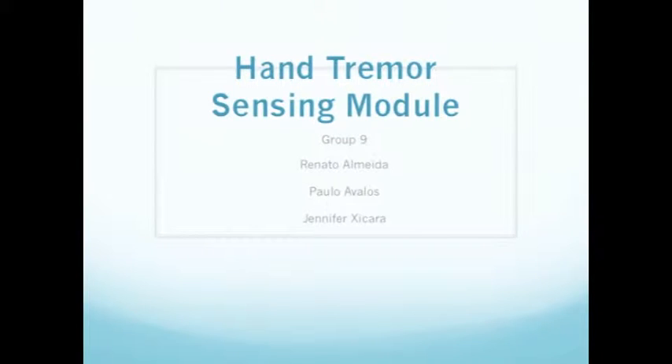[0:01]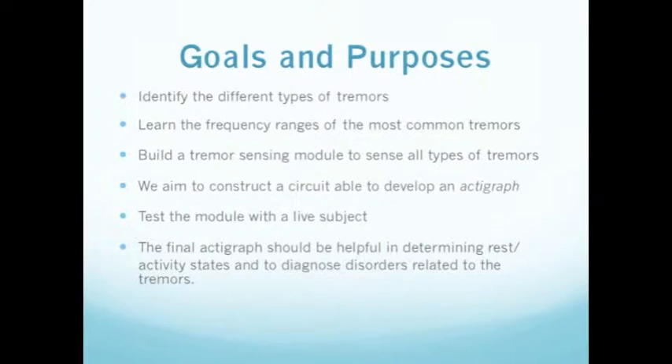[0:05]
Hand Tremor Sensing Module, Group 9. Today we start off by going over specific diseases we plan on diagnosing with our medical device. Some background information on tremors will include the identification of different tremor types as well as the frequency ranges of the most common tremors. We will then move on to describe how to build the tremor sensing module to sense all types of tremors mentioned.
We aim to construct a circuit able to develop an actigraph for which our medical device will be used to diagnose our subject for tremors. We will then go ahead and demonstrate how we test the modules with the live subject. And finally, the actigraph should be used in determining rest and activity states, which will aid in diagnosing disorders for which tremors are primarily a symptom.
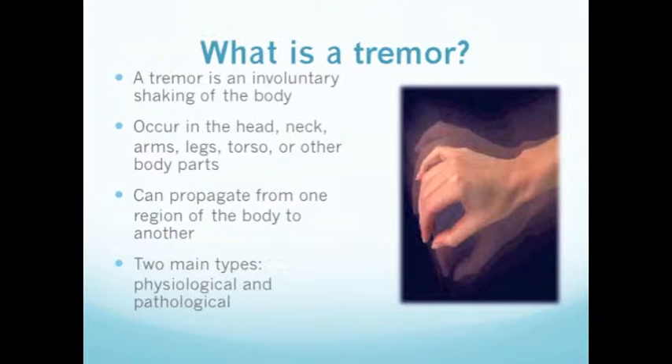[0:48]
For starters, a tremor is an involuntary shaking of the body. Tremor is an unintentional, rhythmic muscle movement involving to and fro movement of one or more parts of the body. The two main types are physiological and pathological. In some people, tremor is a symptom of a neurological disorder or appears as a side effect of certain drugs. The most common form of a tremor, however, occurs in otherwise largely healthy people. Although tremor is not life-threatening, it can be embarrassing to some people and make it harder to perform daily tasks.
This is due to the characteristics of tremors, which may include a rhythmic shaking in the hand, arms, head, legs, or trunk, shaking voice, difficulty writing or drawing, or problems holding and controlling utensils, such as a fork. Some tremors may be triggered by or become exaggerated during times of stress or strong emotion, when the individual is physically exhausted or during certain postures or movements. Tremors may occur at any age, but are most common in middle-aged and older persons. They may be occasional, temporary, or occur intermittently. Tremors also affect men and women equally.
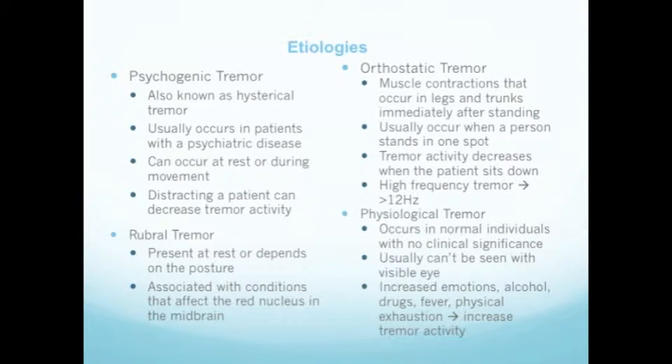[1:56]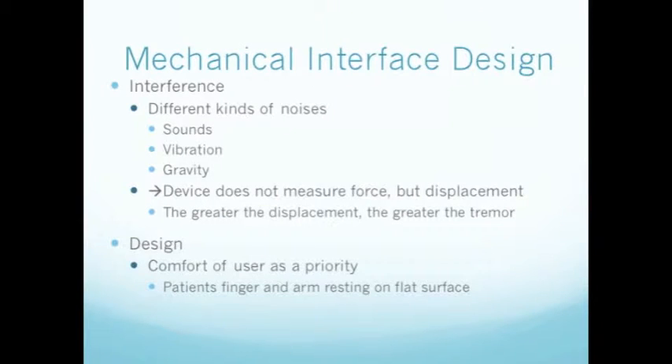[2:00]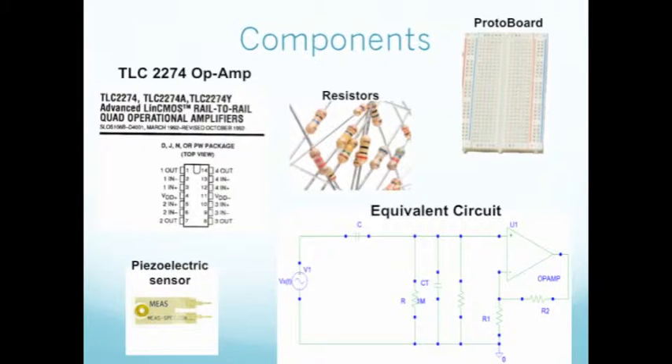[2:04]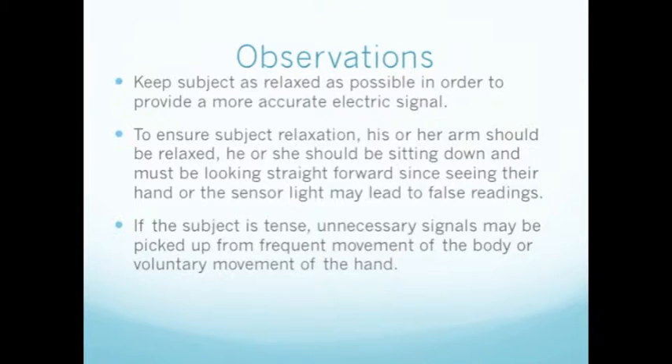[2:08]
A useful way to understand and describe tremors is to define them according to the following types. Parkinsonian tremor, which is commonly due to brain trauma in which brain structures are compromised, such as those in charge of movement control. Patients for the most part have trouble initiating movement and are generally over the age of 60.
Essential tremor, aka benign tremor, is related to genetics and usually affects the hand, head, voice, and tongue. Such patients exhibit a repetitive "yes" head movement. Cerebellar tremor occurs at the end of a purposeful movement and is caused by lesions or damage to the cerebellum. These patients have speech problems or rapid eye rolling.
Dystonic tremor, for which they have a movement disorder where they have involuntary muscle contraction, twitching, or repetitive motions, and for the most part display abnormal, painful postures and positions. Complete rest can help relieve this type of tremor for this patient type.
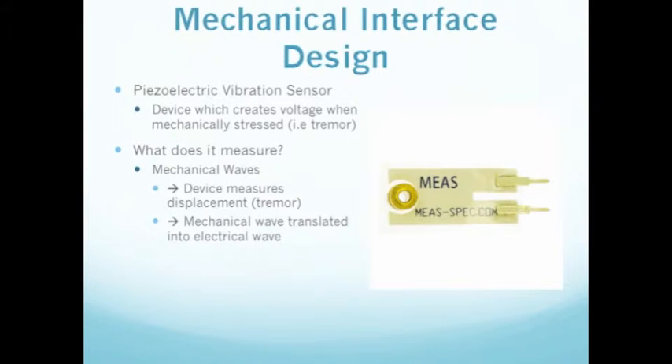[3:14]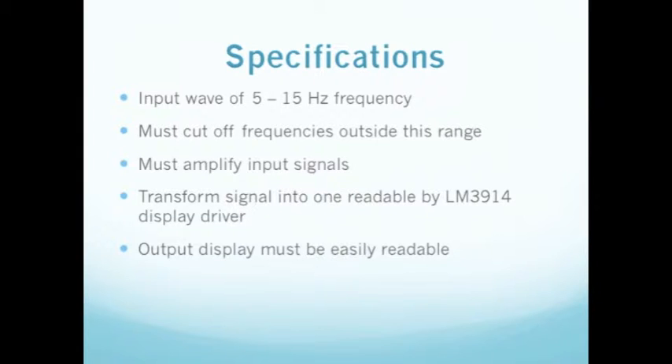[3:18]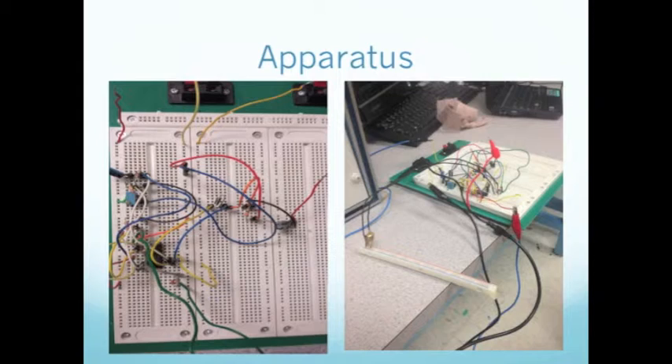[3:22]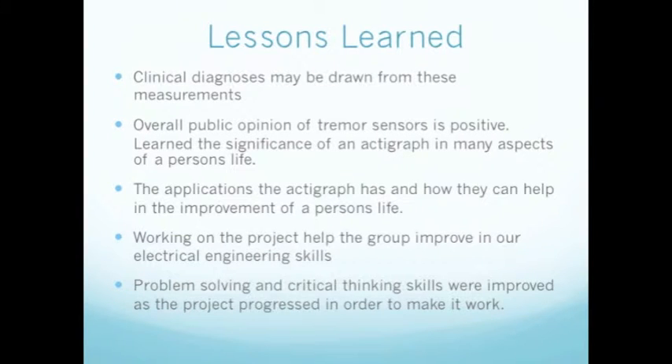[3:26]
We also have psychogenic tremor, also known as hysterical tremor, which usually occurs in patients with a psychiatric disease and can occur at rest or during movement. Distracting a patient can decrease tremor activity. Rubral tremor is present at rest or depends on the posture, and is associated with conditions that affect the red nucleus in the midbrain.
Orthostatic tremor, muscle contractions that occur in the legs and trunk immediately after standing, usually occurs when a person stands in one spot. Tremor activity decreases when the patient sits down, and it is also a high-frequency tremor, greater than 12 Hz. And lastly, we have physiological tremor. It occurs in normal individuals with no clinical significance and usually can be seen with the visible eye. Increased emotions, alcohol, drugs, fever, and physical exhaustion cause increased tremor activity.
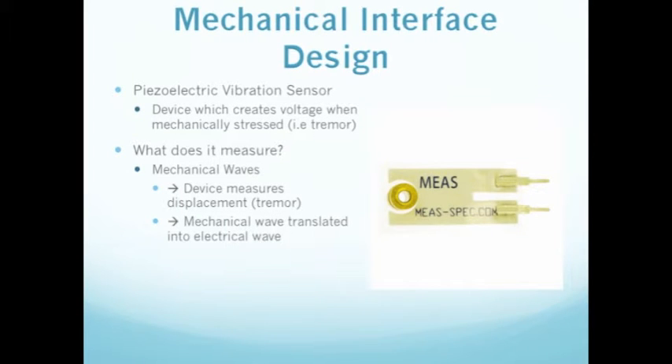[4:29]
In terms of the mechanical interface design, for which we wish to create voltage by inducing mechanical stress, in order to properly detect tremors, we will be using a piezoelectric vibration sensor as displayed in the figure to the right. This sensor will be used to measure mechanical waves which are provided by a tremor, and this device works by measuring displacement, which will then translate mechanical waves into electrical waves.
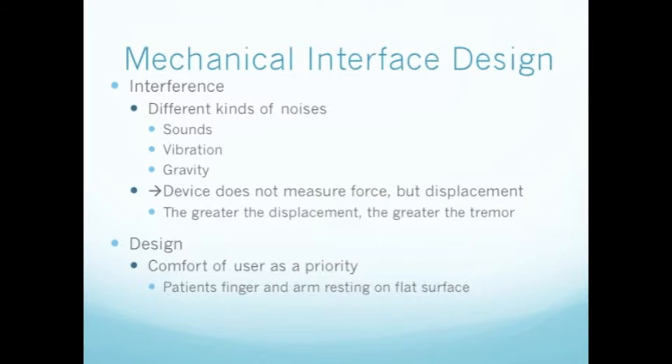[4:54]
A few factors for us to consider for a proper output. We must acknowledge some interference we will come across. Such interference includes different kinds of noise, such as sounds, vibration, and gravity.
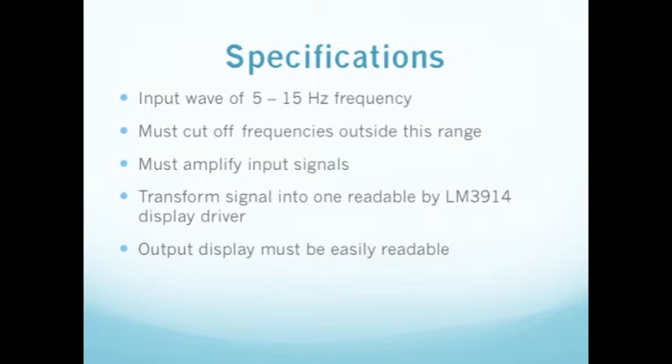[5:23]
For this reason, we must implement a specification in order to get an accurate reading. In our design, we will also consider an easy as well as simple implementation of the device. The following are specifications we must meet in order to achieve satisfactory results.
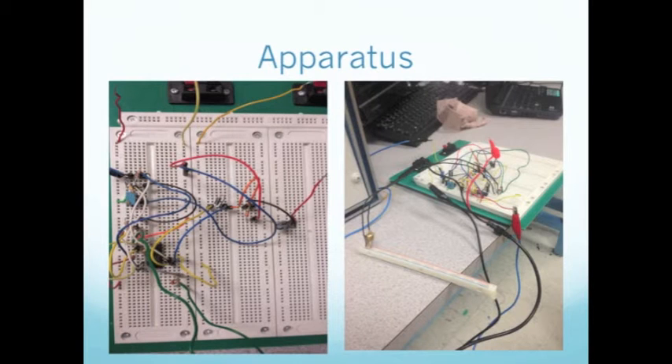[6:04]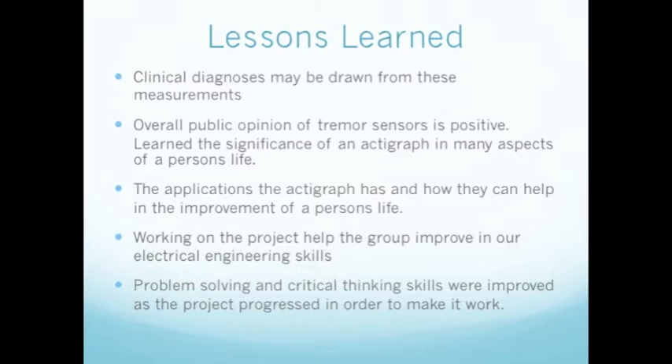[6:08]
The following components were implemented in the lab. The transducer with the patient interface apparatus will now be connected to the input terminals. With no displacement of the transducer, we confirm that the DC voltage at the input to the envelope detector is at the ground potential. We also adjust the potentiometer to adjust this voltage to 0.
Then the nominal voltage gain values in these laboratory instructions will probably implement a level of sensitivity that is too high. So we simulated a very slight tremor by the patient and measured the voltage on pin 5 while observing the display. Then we reduce the voltage gain by lowering the value of resistor 2 in the input stage until the display shows only one segment lit. Then we tested the complete system with tremor amplitudes that simulate normal and pathological values.
As an option, you can enhance your system by adding a sensitivity switch. The normal screening mode, as per the specifications, will be used to distinguish between normal and Parkinson's subjects. The second mode will be applied to subjects with significant tremors to further classify them as moderate or severe.
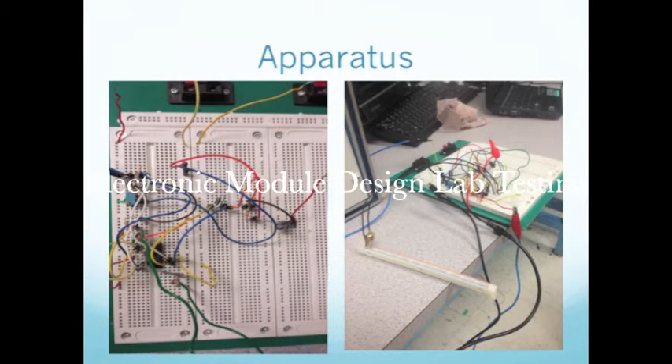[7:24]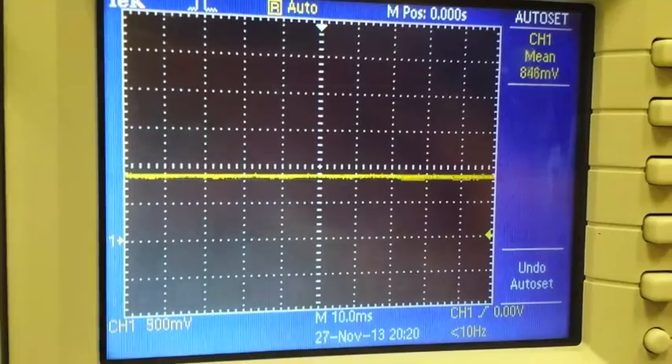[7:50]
Therefore, we obtain this circuitry displayed on the protoboard. The figure on the right is showing the final apparatus as it will measure different tremor types. A long piece to the left of the protoboard, having the piezoelectric vibration sensor attached, will be used to measure the mechanical stress or displacement given off by the tremor, which it converts to voltage, and essentially an output, which the actigraph will display as an oscillation.
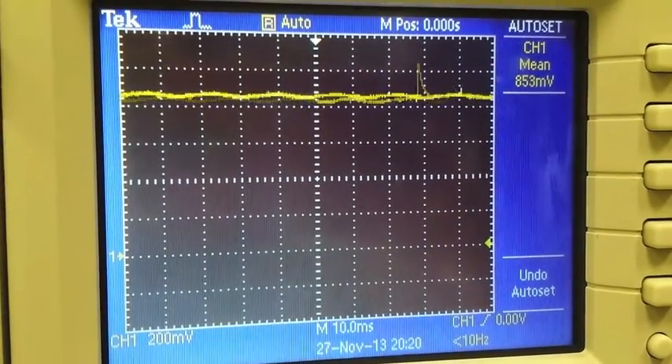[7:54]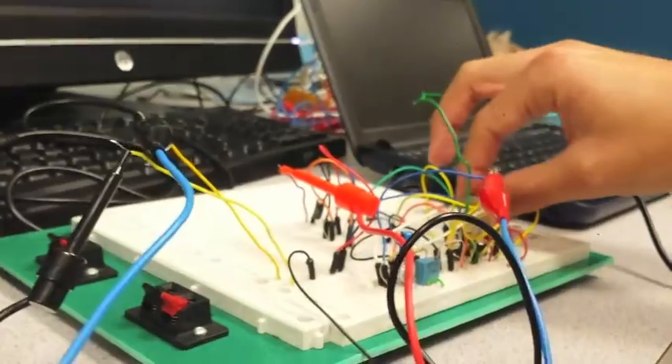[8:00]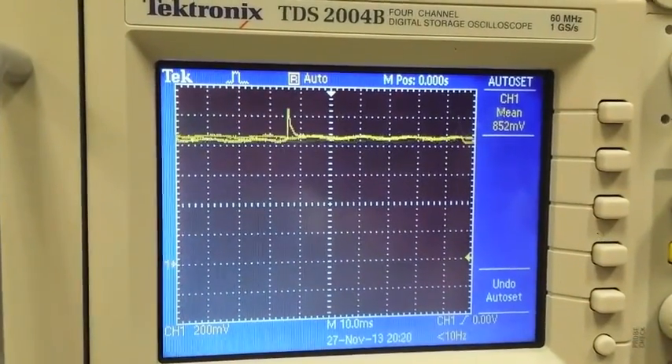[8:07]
In our demonstration, the transducer consists of a piezoelectric plastic film that responds to the tremor motion of the hand of the subject. Then the input amplifier creates a high-pass frequency response based on the capacitance of the sensor combined with the amplifier's input resistance.
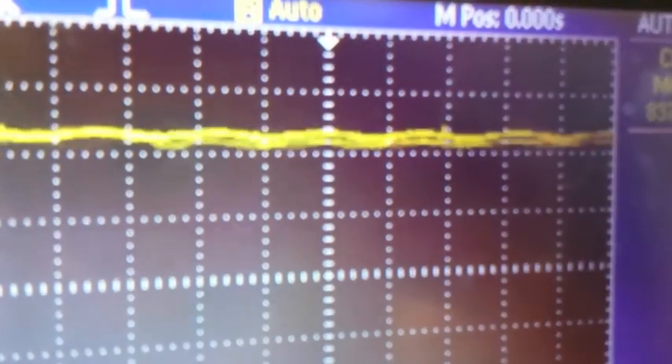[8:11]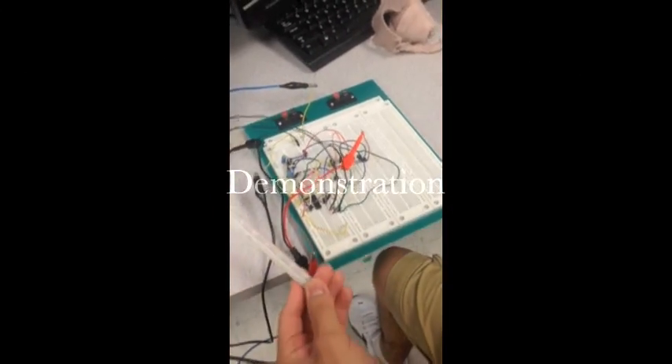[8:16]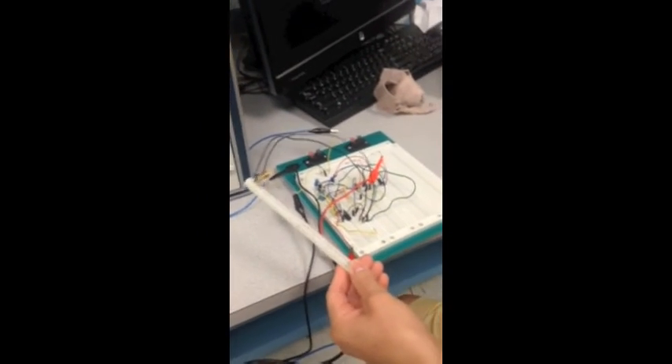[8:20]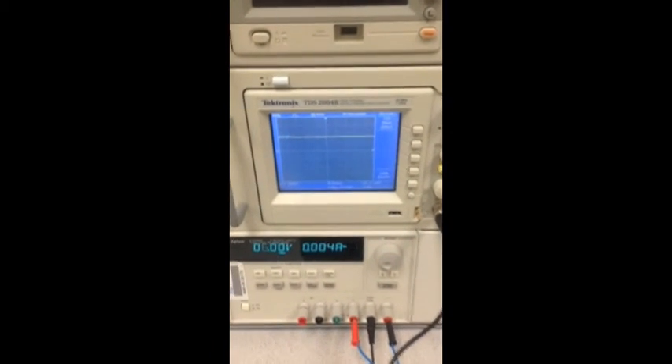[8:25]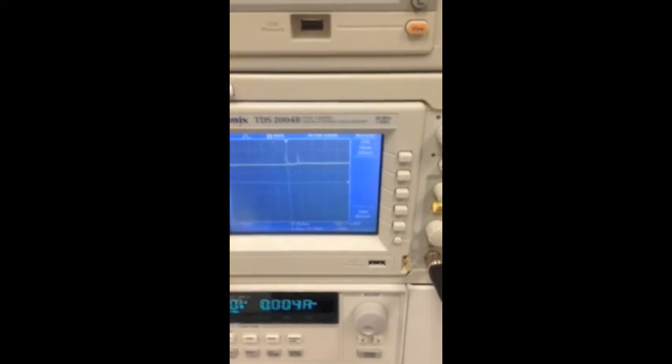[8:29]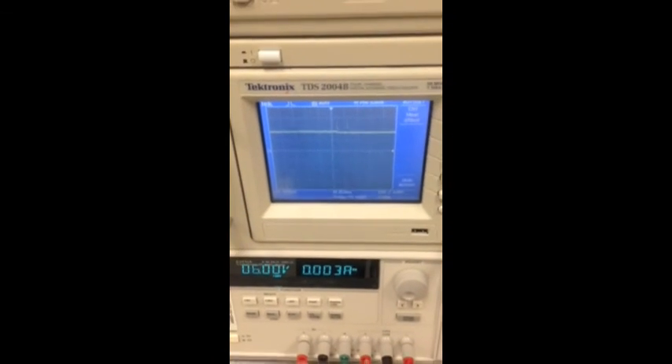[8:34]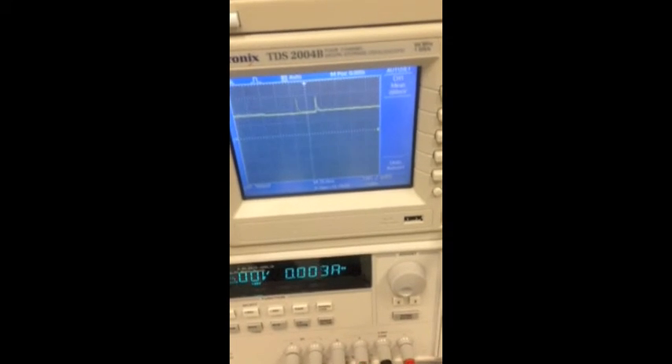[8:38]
The second amplifier has a low-pass response, and it sums the output of the first amplifier stage with a DC offset voltage from a potentiometer. Then it will be adjusted to optimize the DC level of the signal to the LM3914 and zero the display. Then the envelope detector processes the signal to condition it for the display, with a switch to select between the two modes of display. And finally, the piezoelectric vibration sensor will be the interface between the subject and the transducer.
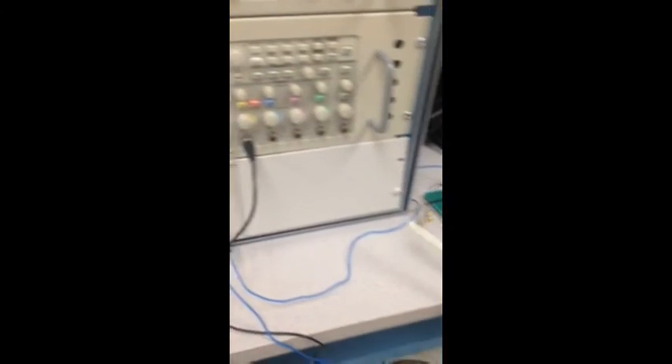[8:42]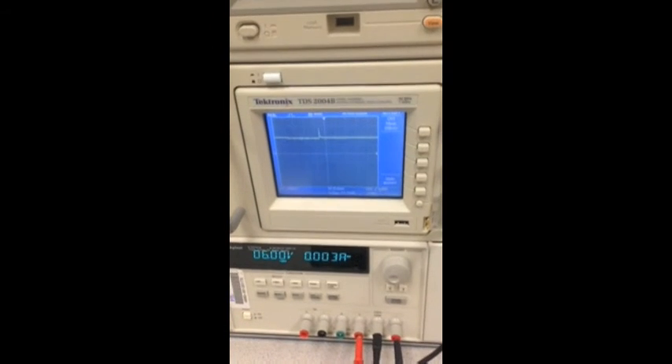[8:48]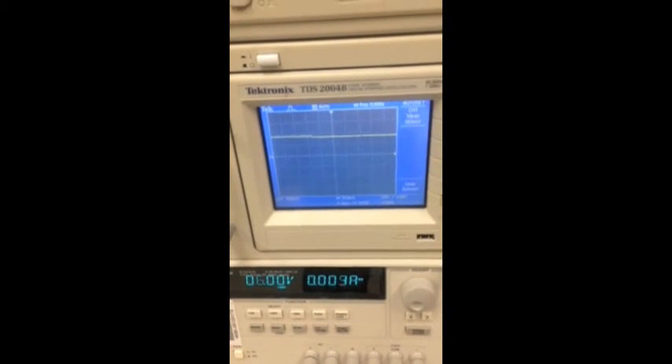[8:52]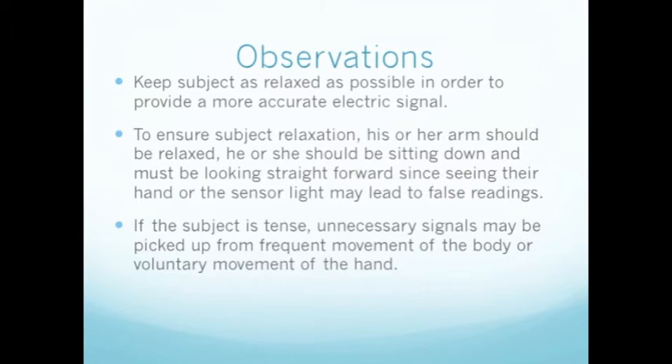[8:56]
The following are things we noticed throughout our trials. We had to keep subjects as relaxed as possible in order to provide a more accurate electrical signal. To ensure subject relaxation, his or her arm should be relaxed. He or she should be sitting down and must be looking straight forward, since seeing their hand or the sensor light may lead to false readings.
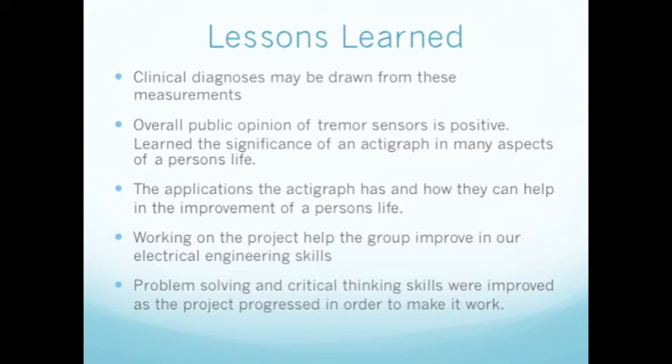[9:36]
If the subject is tense, unnecessary signals may be picked up from frequent movement of the body or voluntary movement of the hand. In sum, things we took from this project were that clinical diagnosis may be drawn from these measurements. Overall public opinion of tremors is positive. We learned the significance of an actigraph in many aspects of a person's life, such as for tremors specifically. We learned the application the actigraph has, but also how they can help in the improvement of a person's life through diagnostics.
Working on the project helped improve our electrical engineering skills. Our problem solving as well as our critical thinking skills were improved as the project progressed in order to get the appropriate reading in the clinical world. And lastly, trial and error is essentially the key to science.